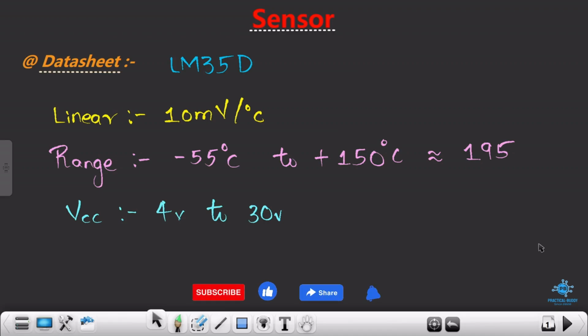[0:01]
Hello engineers, welcome to the new video of the course. In this particular video we are going to redraw, or basically redefine, our block diagram which we drew a few sessions back when we were dealing with the basic block diagram of our project, right?
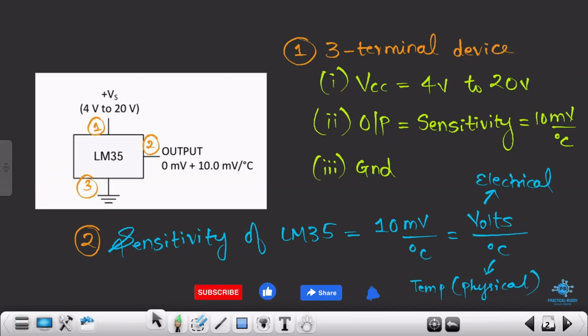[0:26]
Before coming to this particular point, we will quickly revise what we saw in the previous session. In the previous session we understood the concept of a sensor, and specifically we understood the working of LM35 in depth. What exactly it is doing is taking the temperature and converting it into some electrical quantity, and that is volts, right?
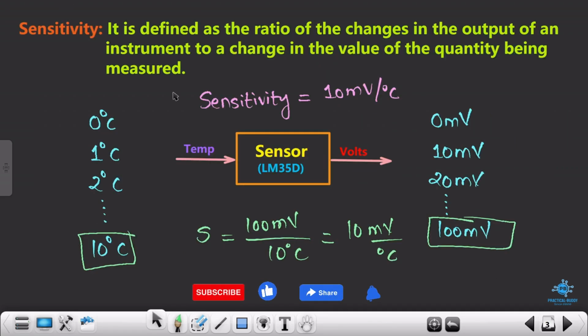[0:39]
But the important thing to notice here is the sensitivity. The sensitivity of this particular sensor is 10 millivolts per degree change in temperature. What does that mean? That means if my temperature increases by 1 degree Celsius, from 0 to 1 degree Celsius, then the sensor provides 10 millivolts at the output. Similarly, if the surrounding temperature is 10 degrees Celsius, then my sensor will provide around 100 millivolts at the output side. The point to notice here is millivolts, right?
Now the sensor is providing me some analog voltage, and it becomes difficult for controllers and processors to identify the analog voltage. Even if they did, another issue they may face is to store this particular voltage, because as you all know, we cannot store the analog voltage. So this analog voltage needs to be converted into digital format.
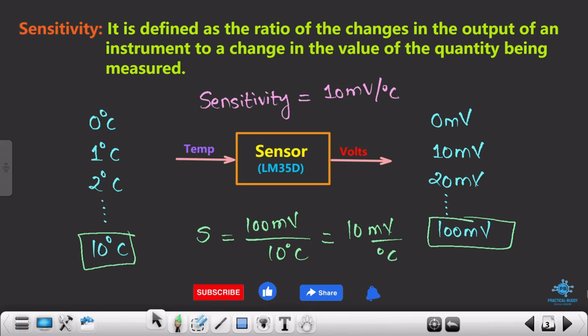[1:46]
Let me proceed further. You see here, a microcontroller cannot process the analog data which comes from the sensors, right? Why? Because to process the data you first need to store the data, then analyze that particular data and perform certain actions on it. This analog data needs to be converted into digital form, which can be easily processed by the microcontroller. So we need a system which can convert this analog signal to a digital signal.
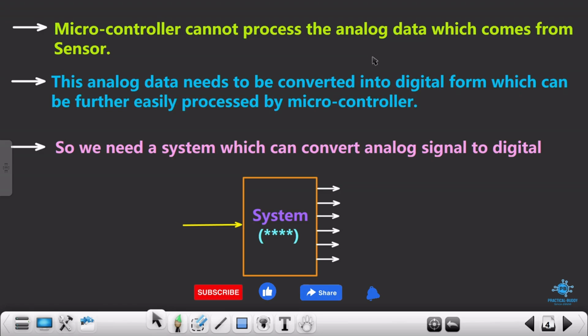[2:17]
It's my request to you all that you please pause this video here and try to think about what that particular system can be. I believe you all have tried your best. Now it's my turn to elaborate on it, or to give you the idea about this particular system.
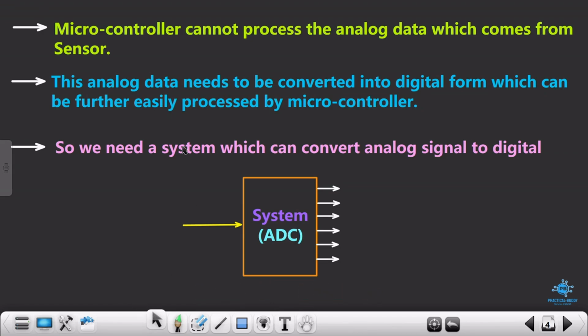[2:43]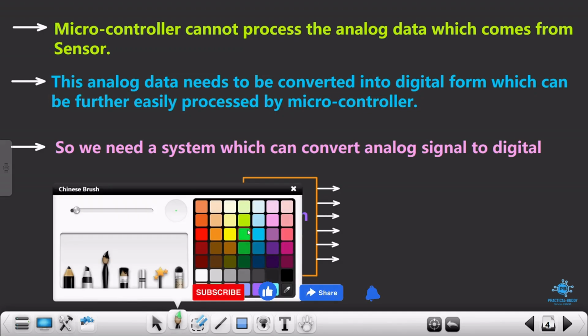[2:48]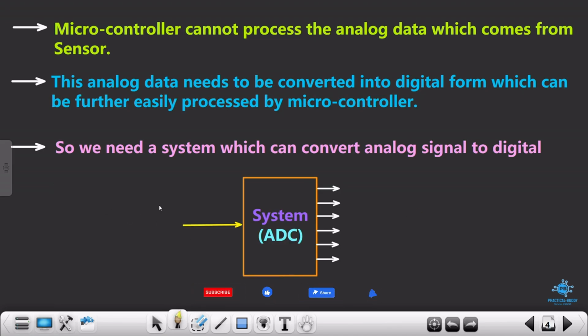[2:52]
So the name of this system is ADC, analog to digital converter. That means you are getting some analog voltage here. This is my V analog. Obviously it will be in millivolts, whatever voltage the sensor provides. Let's suppose 100 millivolts, and that defines that the sensor is getting around 10 degrees Celsius at its input, so that's why it is providing 100 millivolts at the output side.
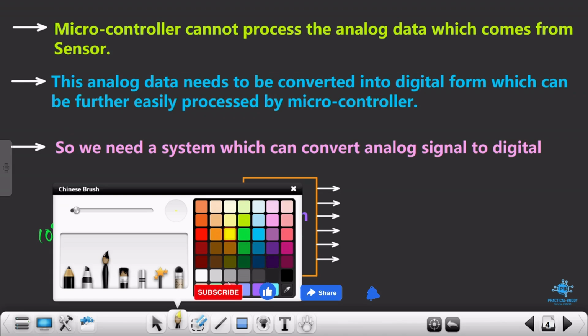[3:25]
This 100 millivolts needs to be converted into some digital data, and that is done by this particular system, the ADC. So instead of 100 millivolts, now this ADC will give certain digital data. I'm just writing a rough value, 1 0 0 1, something like that. So this ADC will provide 1s and 0s at its output side. Now it is much easier to store these 1s and 0s, and after storing them, we can process this data, and that is the task of the controller, right?
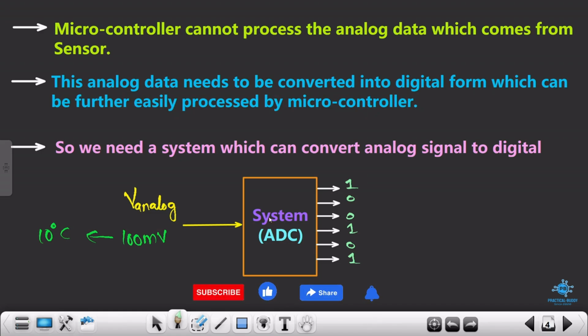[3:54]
I hope you understood this concept of ADC. What is the task of ADC? The task of ADC is to convert the analog data which it is getting at its input side from the sensor into digital format.
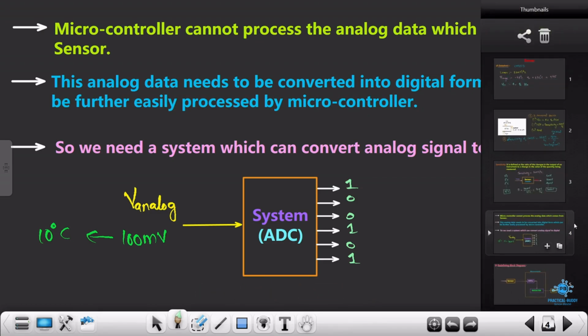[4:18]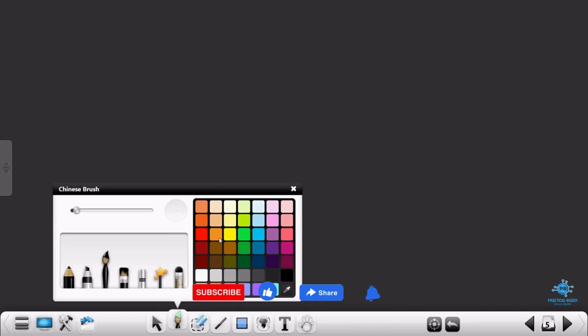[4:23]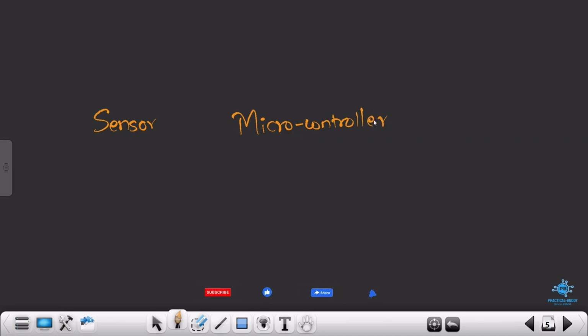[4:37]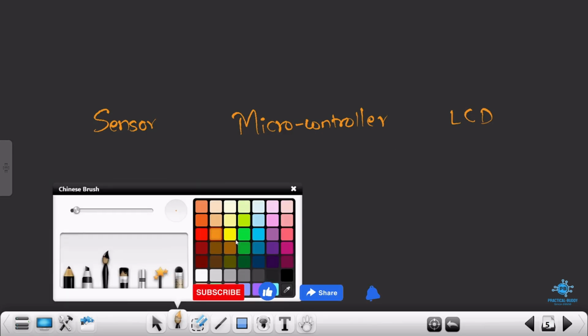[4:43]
Okay, now we need to redefine this particular block diagram which we had seen in the previous few sessions, right? Let me just give you a rough idea of what we saw in the block diagram session. There was one sensor, the output of this sensor is connected to some microcontroller, and then the microcontroller was displaying certain data to the LCD. So this was the rough block diagram which we drew when we started this particular project, right?
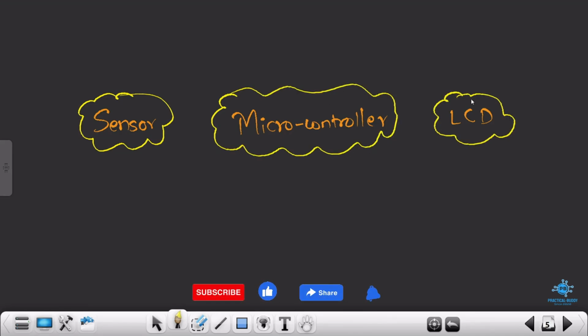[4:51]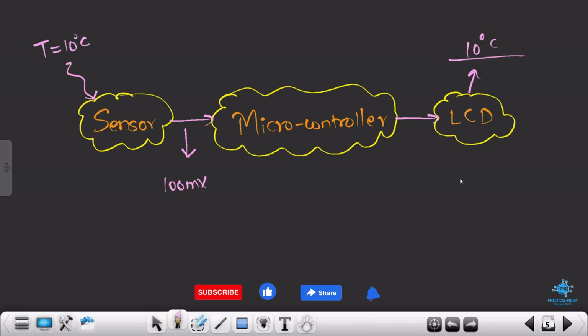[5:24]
Now we need to elaborate this particular block diagram. So you will get input to the microcontroller from the sensor. The temperature, let's suppose it is 10 degrees Celsius, right? So now you know that the sensor will provide 100 millivolts at its output side. The microcontroller will store this data, and obviously it is going to give some hex codes to the LCD, and this LCD should display 10 degrees Celsius. It should not display this 100 millivolts, right? It should display 10 degrees Celsius. So that is my task.
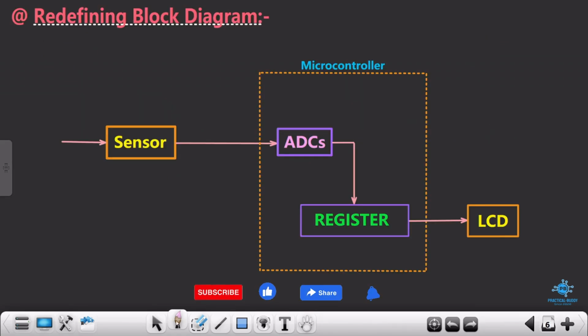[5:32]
So now let's redefine this particular block diagram. This is how it will look. You see over here that the sensor is getting, it is sensing, 10 degrees Celsius. Now this 10 degrees Celsius will be converted to 100 millivolts for sure, because the sensitivity is how much? 10 millivolts per degree change in temperature. So you will get 100 millivolts over here. Now as I had clearly mentioned, we cannot store this analog data, right? We need to convert this analog data into digital format. That is done with the help of this ADC. So 100 millivolts will be converted into some digital data.
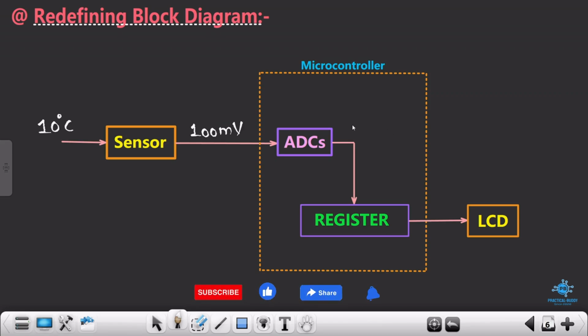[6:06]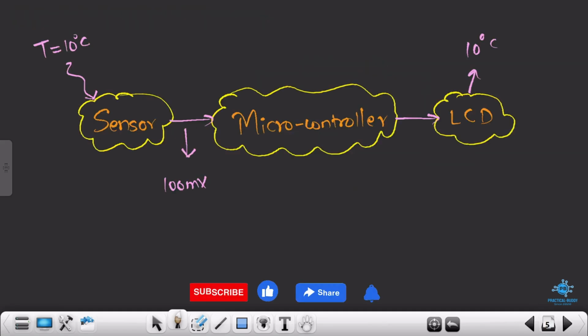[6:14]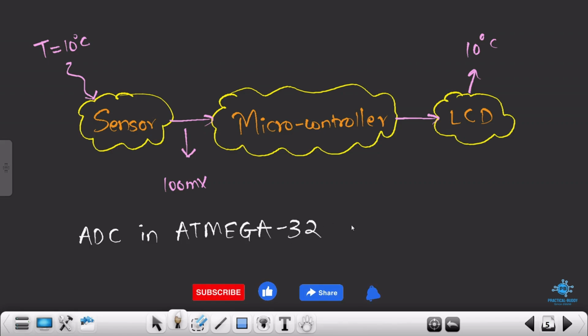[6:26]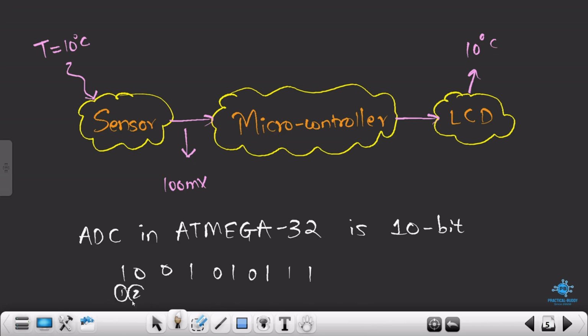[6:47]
Let's suppose that particular data is 111, right? Because as I had clearly mentioned, if you could remember, the ADC present in ATmega32, and in fact in Arduino as well, is of 10 bit in size. So now you will get 10 different logics, like 1 0 0 1, 0 1 1 0, something like that. 1 2 3 4 5 6 7 8 9 and 10. So you will get 10 such bits.
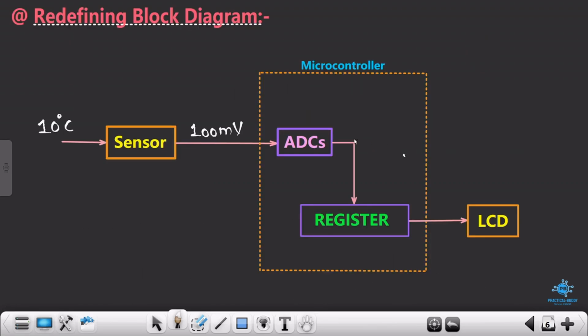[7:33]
The equivalent of 100 millivolts will be these 10 bits, right? Now we don't know what that value is. It's not required as of now. You just need to understand it in the basic format, so that it will help us to design the program and the logic properly. So basically this 100 millivolts will be converted into some 10 bits of data. When I say that it is converted into 10 bits of data, obviously it will be held by a certain register. Let's suppose this 10 bit data is X. We don't know what that particular value is. So this 100 millivolts got converted into X, and X is nothing but 10 bit data.
This data obviously needs to be stored in some register, right? As I clearly mentioned, what is the task of a register? The task of a register is to hold the data. So inside the microcontroller, there is some register. Now we don't know what that particular register is. Don't worry, we are going to see that as well. But the basic task is to hold this particular data, right? And after that, we cannot display 100 millivolts over here. So this 10 bit data which is stored in this register needs to be converted, and then you need to display it over here as 10 degrees Celsius. So this will be the modified block diagram of our project.
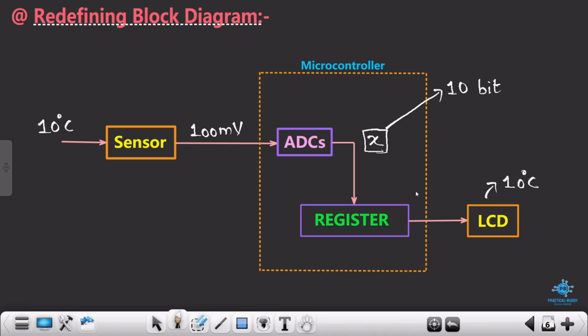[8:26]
Okay, and this will be the final block diagram of our project. Again, I'll just repeat all the things we saw. At first we saw the concept of a sensor. The task of a sensor is to convert the temperature, or the physical quantity, into an electrical quantity. In our case, the LM35 sensor that we are using converts 10 degrees Celsius into 100 millivolts, right? So basically it is converting the temperature into voltage.
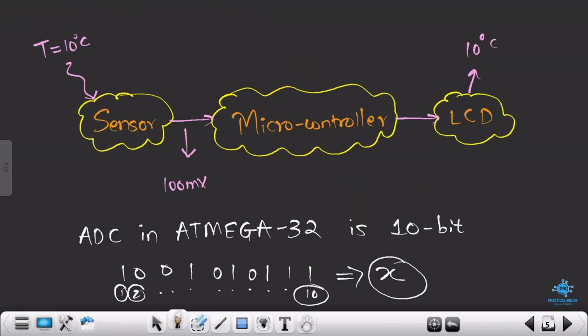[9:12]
Now the microcontroller cannot process the analog signal because it needs to be stored, and as we know, an analog signal can't be stored. So basically we take ADCs, which are readily available in the ATmega32. The task of the ADC is to convert this analog data into digital format. So this particular analog data, 100 millivolts, will be converted into 10 bits of data, right? Okay, so these are random values. It's not necessary that you will get only these values. I'm just taking this as 10 bits.
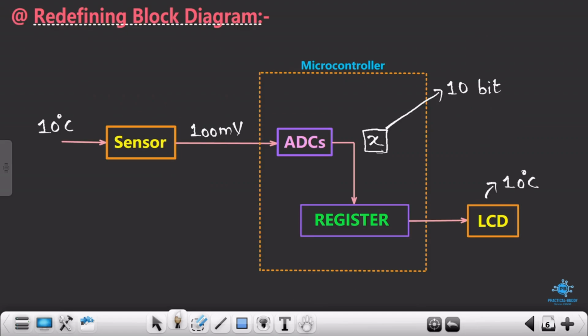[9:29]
Okay, so let's suppose these 10 bits are held by this particular variable, X. Now this 10 bits of data needs to be stored in a certain register, right? We don't know the name of the register yet. I'm going to reveal that name in the upcoming session, so don't worry about that. This X is held by this register, and after that you need to convert this 10 bits of data into a readable format, that is 10 degrees Celsius. So this will be the entire working, or the block diagram, of our project.
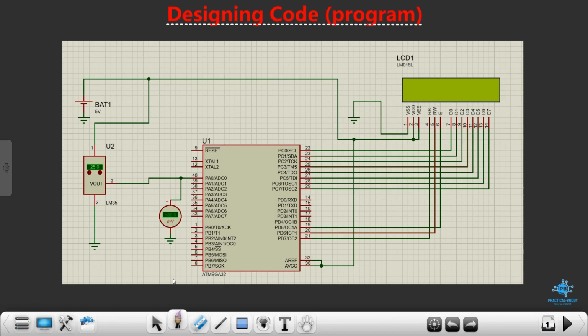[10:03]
Okay. But before coming to the programming part, just remember, whenever you deal with an embedded system, before designing the software or the programming part, you first need to understand the hardware. Without understanding the connection of certain components, or certain input and output systems, you cannot design the entire code, right? So it becomes pretty important for us to understand the hardware interfacing.
So over here, this is my ATmega32 microcontroller. This is my LCD, and this is my LM35 sensor. As I have already said, we need to connect this sensor to the ADC channel, and this is my ADC channel, ADC0. So I'm connecting it to this ADC0 channel, or basically pin number 0 of port A. Okay, this is my sensor.
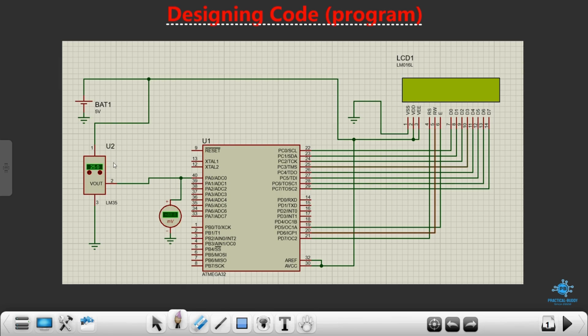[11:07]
I hope you all know the pinouts of the LM35, which we had already discussed in our previous session, and also we had seen its working and its sensitivity, right? I hope you all remember that. If not, my request is that you please go back to those videos and recollect all the points which we discussed in them.
So over here, pin number 1 is my VCC. Pin number 2 is my Vout pin, and the last one, pin number 3, is my ground pin. So whatever output this sensor gives, we have connected this output pin to pin 0 of port A. Okay, I hope this part is crystal clear.
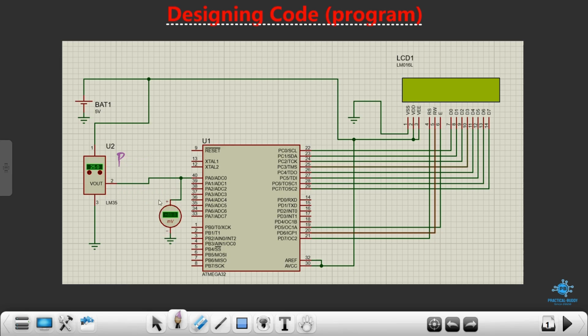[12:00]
And over here I have just connected the voltmeter. I'll explain why exactly I have connected this voltmeter over here, so don't worry about that. And then this is my LCD. I have connected the data pins of the LCD, from D0 to D7, to port C. So this is my port C. If you remember in the previous session, when we saw the interfacing of the LCD with the ATmega32, the connection was the same, right? It was similar. I have not changed anything. So the data pins are connected to port C, and then we have these 3 pins, that is RS, RW and enable.
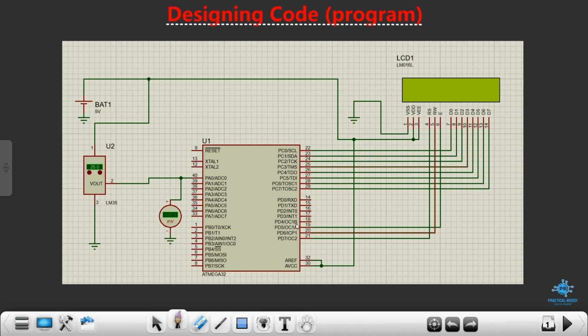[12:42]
We have connected it to pin number 5, 6 and 7 of port D. So this is my port D. To pin number 5, 6 and 7 we have connected the RS, RW and enable pin, and then VSS is grounded, VDD and VE we have connected to 5 volts.
This AREF and AVCC we have connected to 5 volts, so don't worry. I'll explain this as well when we proceed further. So this was the hardware part. I hope that you understood how exactly we have connected the input and the output system.
The input system was the sensor, we have connected it to pin number 0 of port A. The output system is our LCD, through which we are going to display the output or the data that we want to show. We have connected the data pins to port C, and RS, RW and enable pin, which are basically the controlling pins of our LCD, we have connected to pin 5, 6 and 7 of port D.
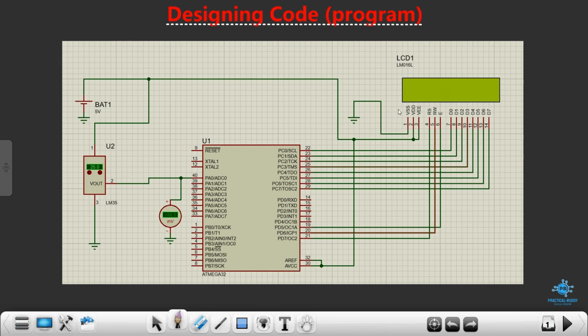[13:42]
And then I hope you guys know the function of VE and VDD. VE is the LCD contrast, through which you can control the backlight of the LCD and all, which we had already discussed, so I will not discuss that part over here. So this was all about the hardware part. I believe that you understood the hardware part.
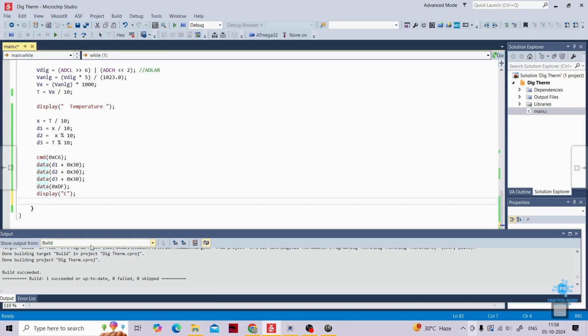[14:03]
Okay, modify that. So I'll ask my controller to again give back the data to the first row, first column of the LCD, that is 0x80. Let me again run it, and yes, it is not giving any warning. And you see right now the time is 11:58.
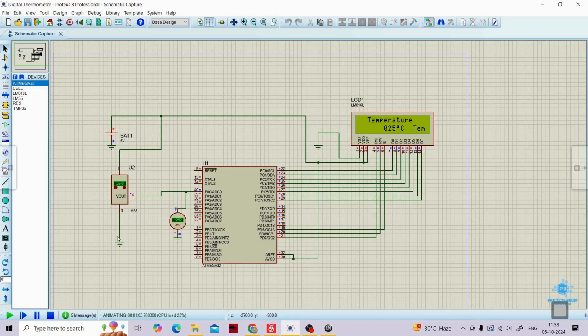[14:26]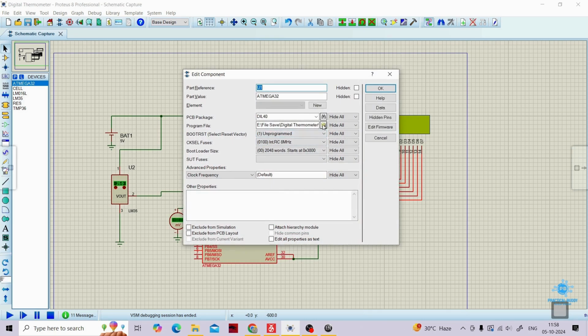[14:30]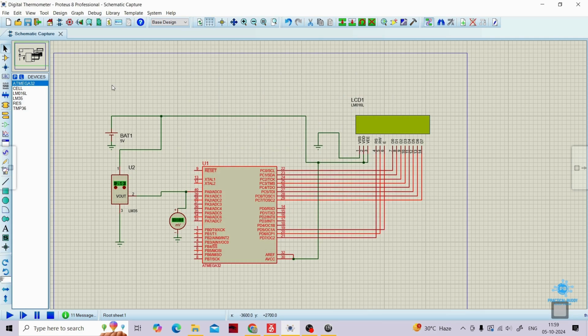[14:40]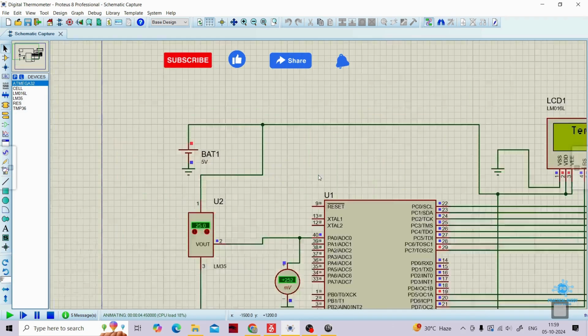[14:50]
So let's quickly burn. First of all, we need to pause it and quickly burn the updated code. You see the timing is 11:58, approximately 5th of October 2024. Just click on open, and I'll click on OK, and then I'll run it. Alright, you see temperature, and beneath it you will be getting 25 degrees Celsius.
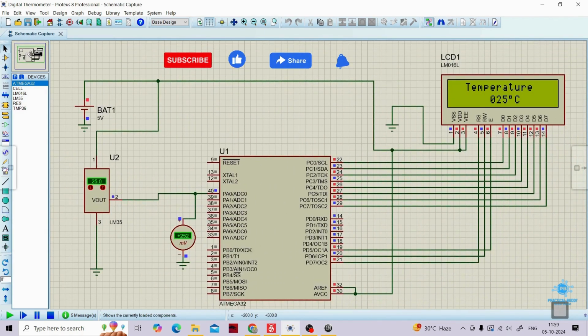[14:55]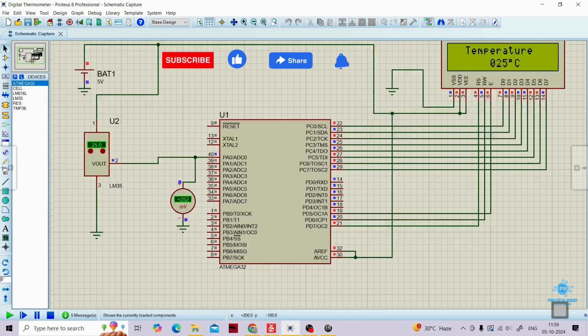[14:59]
One sec, there is some issue with my mouse, so I'm not able to zoom it out properly, but I hope you are able to see this. Yeah, you see it is 25 degrees Celsius.
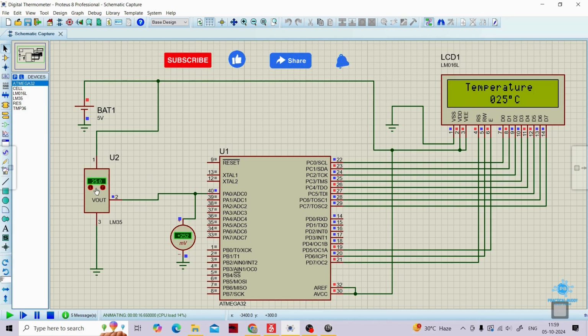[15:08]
Now let's suppose I want to show 5 degrees or 8 degrees Celsius, let's suppose my temperature is below 10 degrees Celsius. Let's see what we are getting. 7 degrees Celsius, let's say. You see it is trying to match with this particular sensor's value. Yeah, you see it is 007 degrees Celsius, right?
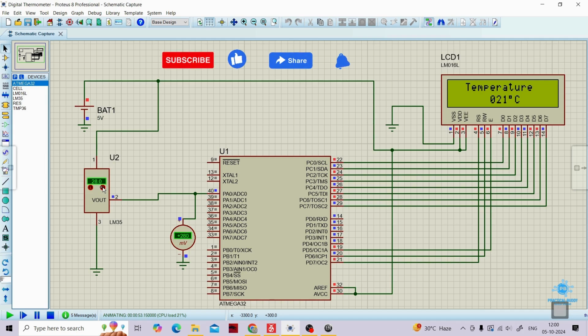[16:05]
So this is how you have to observe things over here, and I hope that you are able to understand the entire thing that we have studied right from the starting. Now let me increase the temperature. Let's say I want to show 102 degrees Celsius. So you see over here it is 102 degrees Celsius. The sensor is sensing 102 degrees Celsius, and you see on the LCD we are able to get 102 degrees Celsius, right? I hope you are able to understand this.
96 degrees Celsius, and it will update. It will take a few seconds. Yeah, you see 96 degrees Celsius. Let's say from 90 I'm going back again to somewhere around 52, 51 degrees Celsius. So it should be able to show 51 degrees Celsius. Yeah, it is showing that.
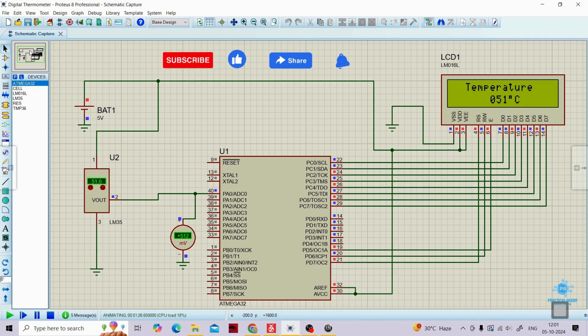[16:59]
So with this we have actually completed the entire project.